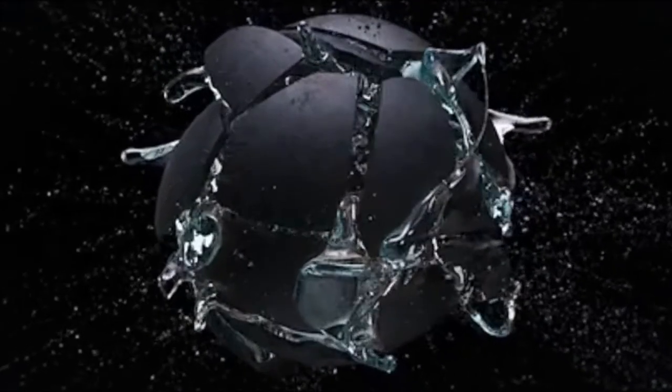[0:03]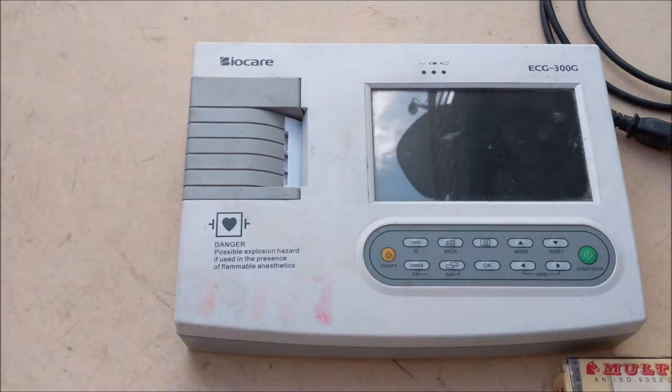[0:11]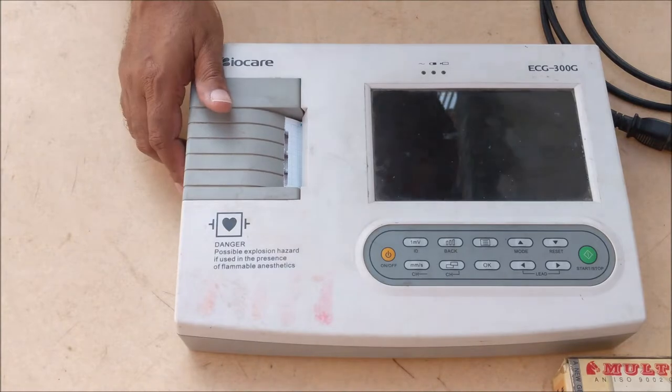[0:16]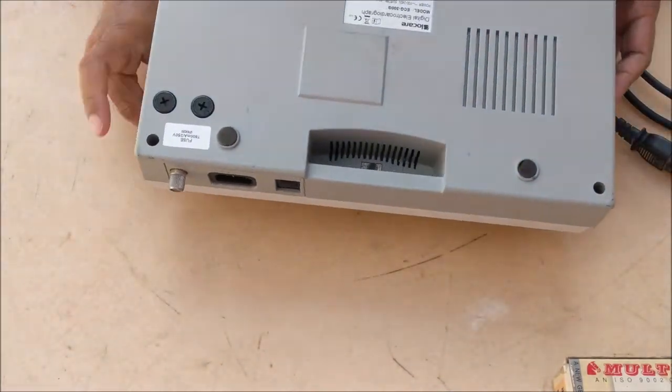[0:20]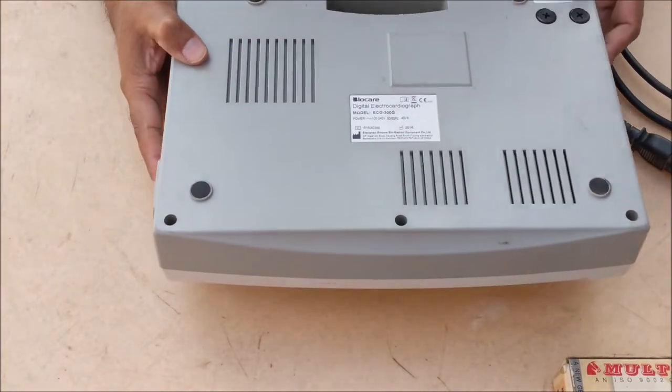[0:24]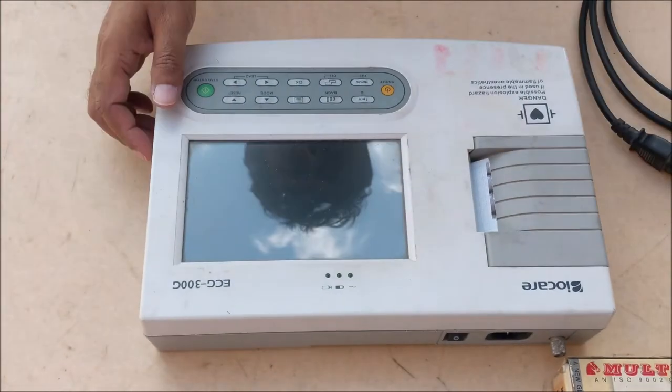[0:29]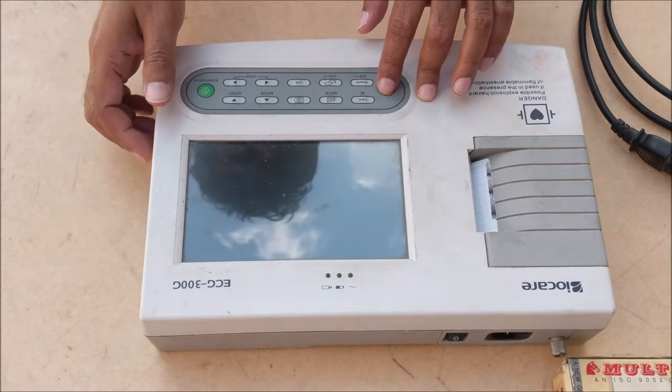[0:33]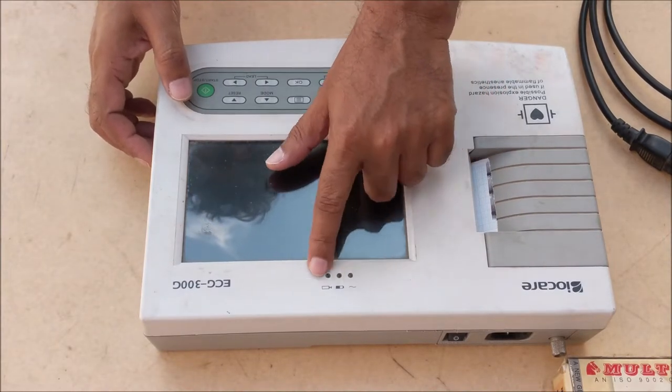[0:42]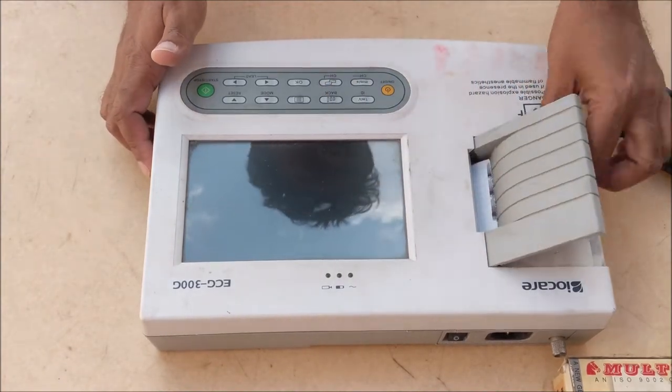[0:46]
Today we are going to repair this ECG machine of Biocare company, whose model number is 300G. You can see that when we turn on the machine, there is no display, and even the battery indicator is not flashing. So let's open the machine.
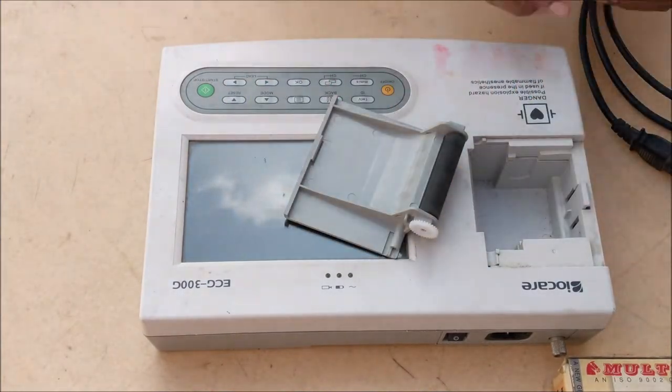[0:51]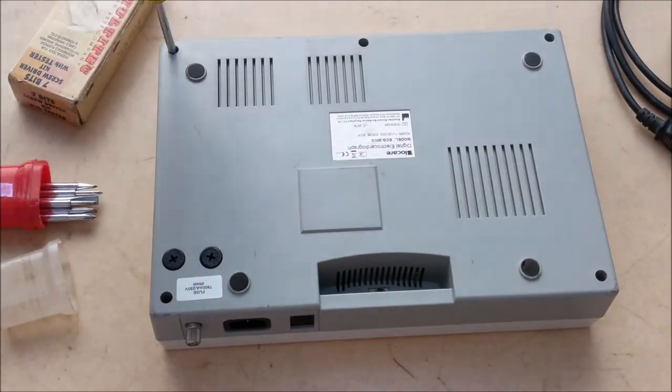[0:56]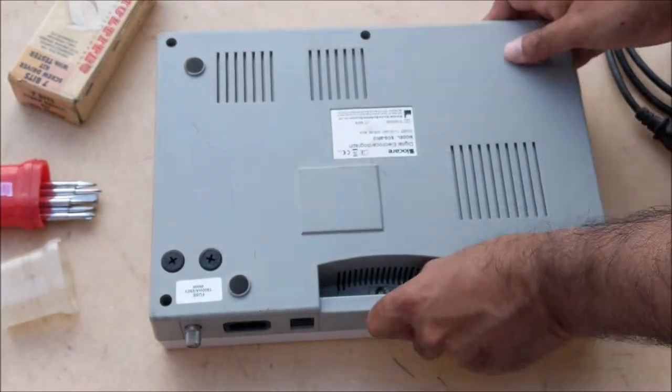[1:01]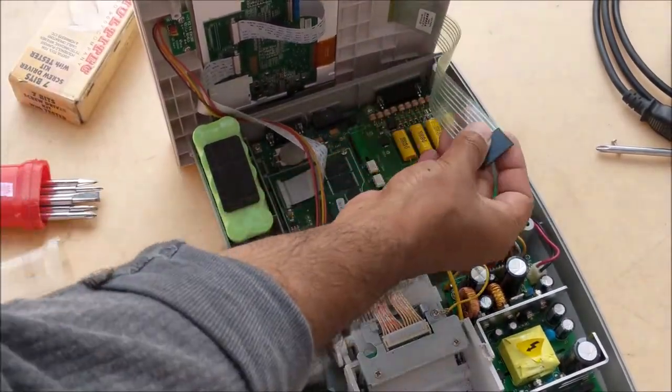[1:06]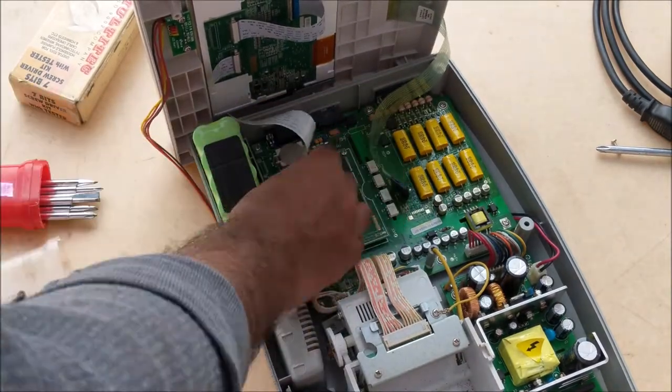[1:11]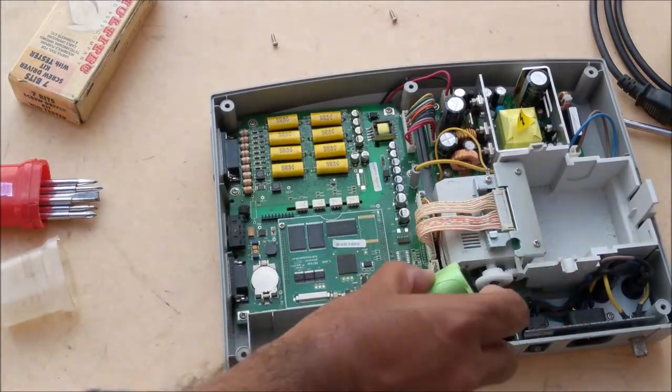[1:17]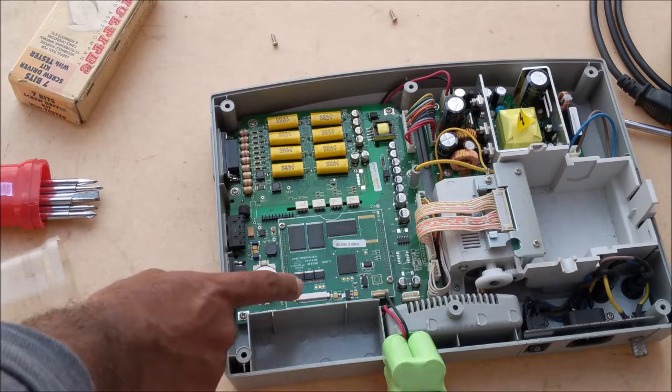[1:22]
First, remove the thermal paper and its plastic cover. Now unscrew all the 6 screws from the back of the machine. Open all 3 connectors to completely remove the upper cover. Since the battery wire is under the main circuit board, we have to remove the main board to remove the battery.
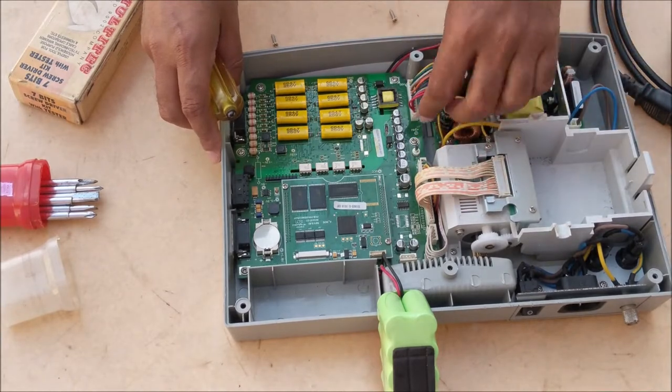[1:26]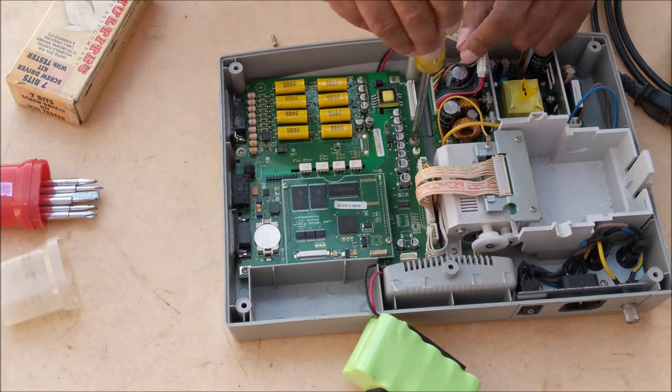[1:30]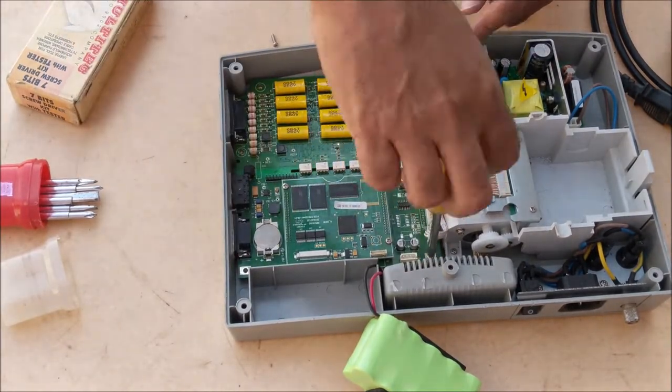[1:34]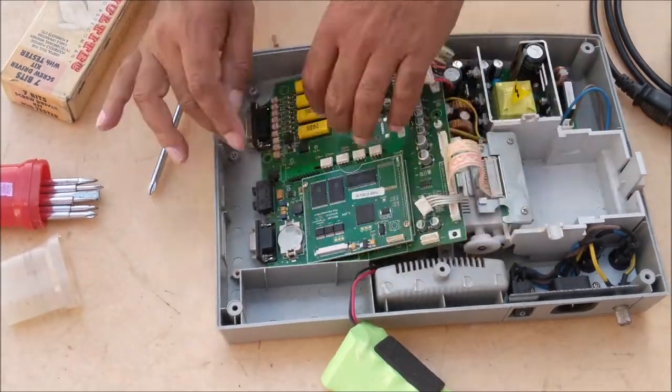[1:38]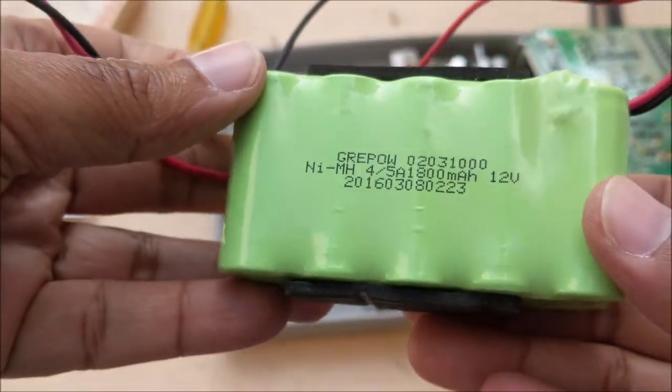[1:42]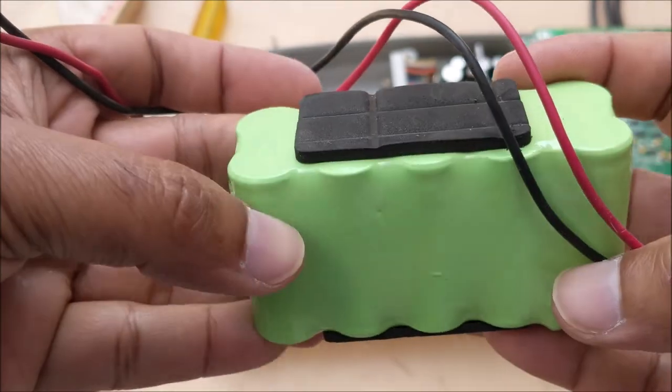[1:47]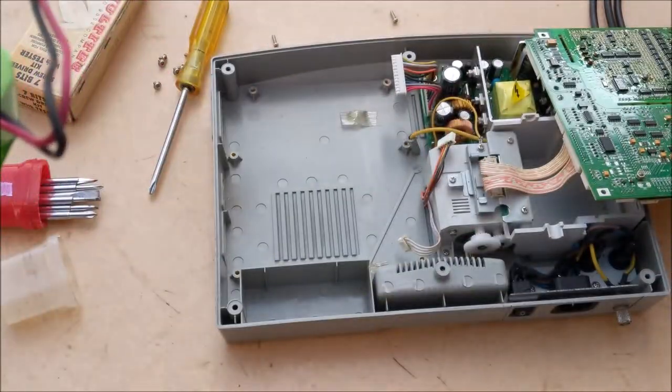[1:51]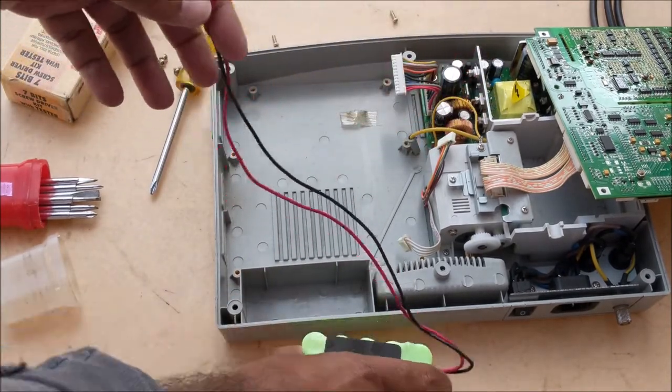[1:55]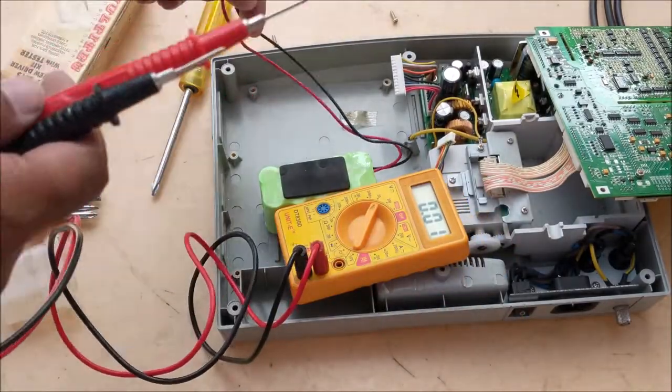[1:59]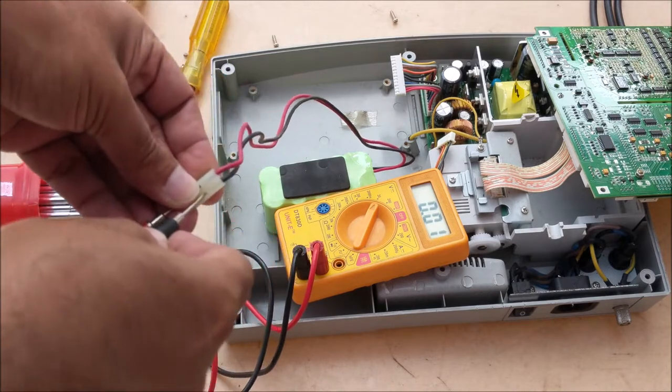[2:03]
This battery pack is made up of 10 nickel metal hydride batteries, all connected in series to deliver 12 volt 1800 milliampere hour. Let's check the battery with multimeter. You can see that the multimeter is not showing any reading, so the battery is completely dead.
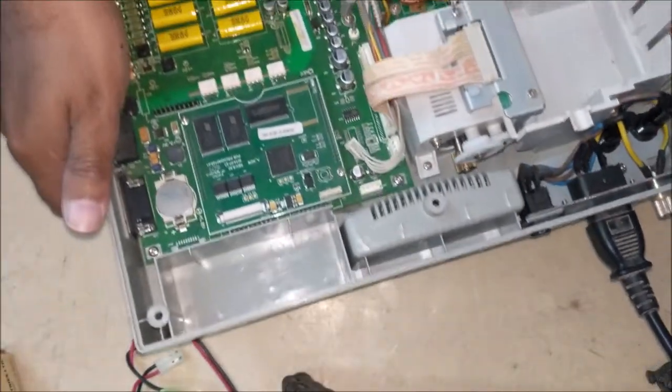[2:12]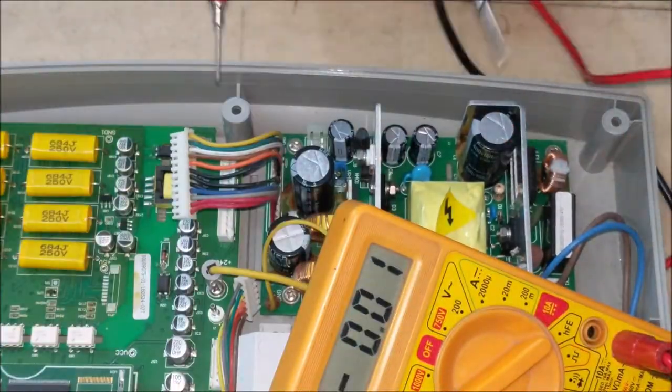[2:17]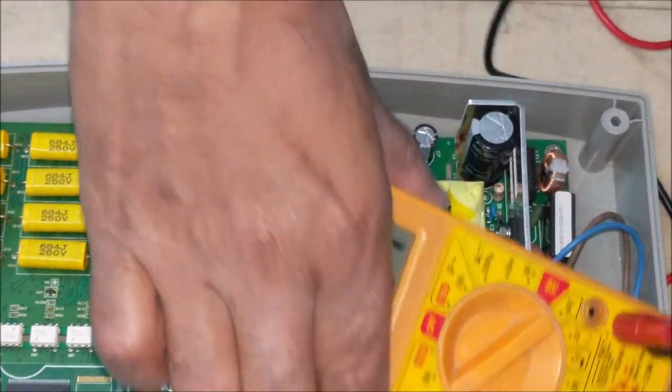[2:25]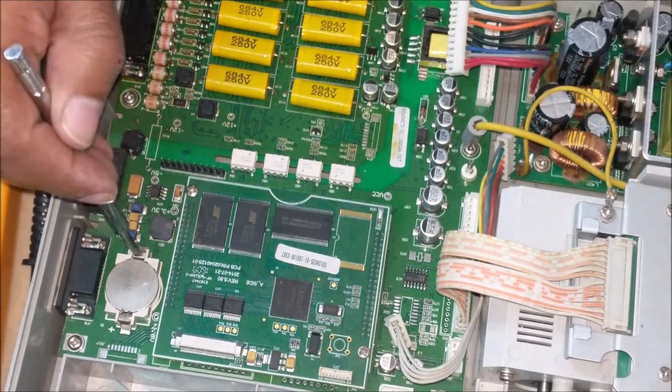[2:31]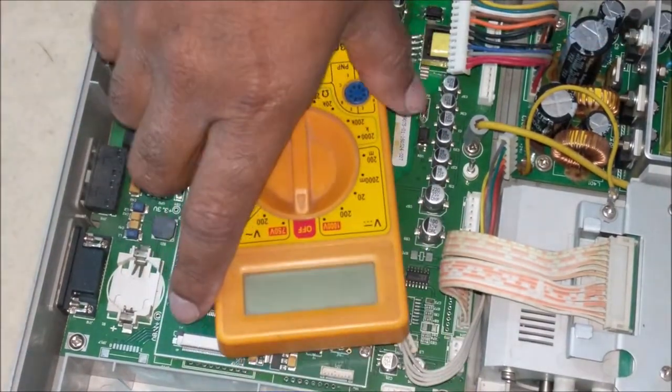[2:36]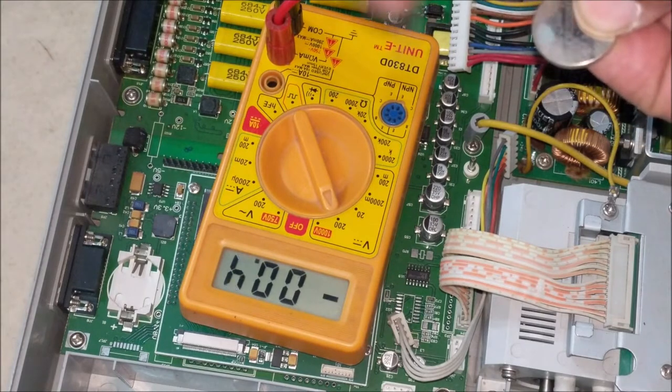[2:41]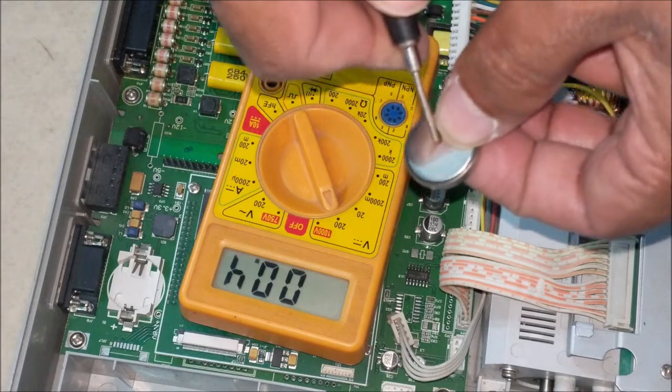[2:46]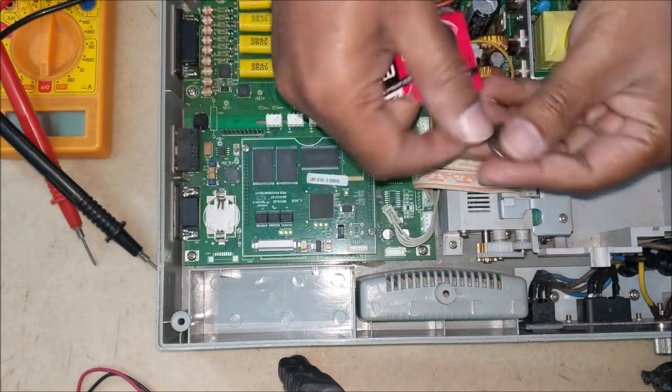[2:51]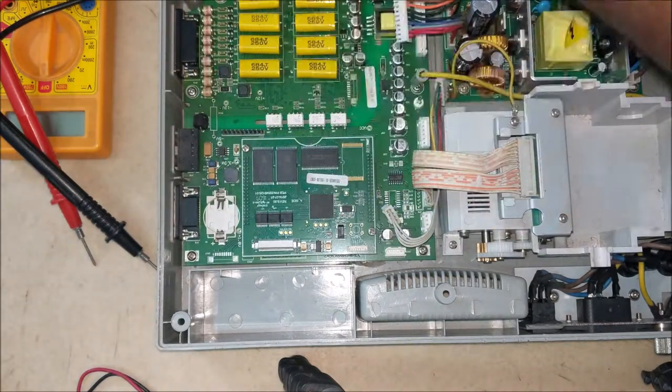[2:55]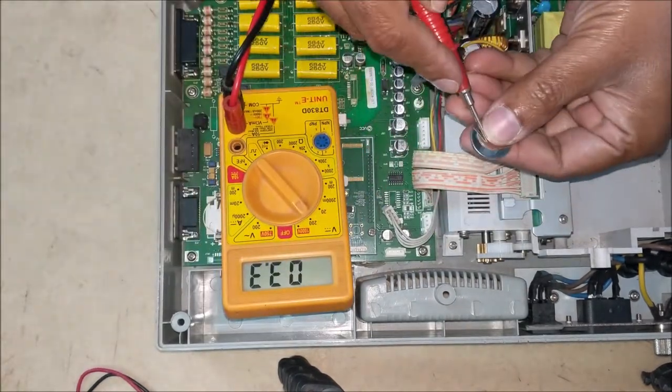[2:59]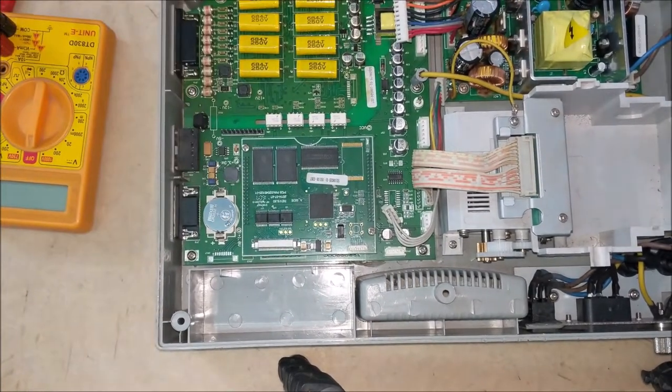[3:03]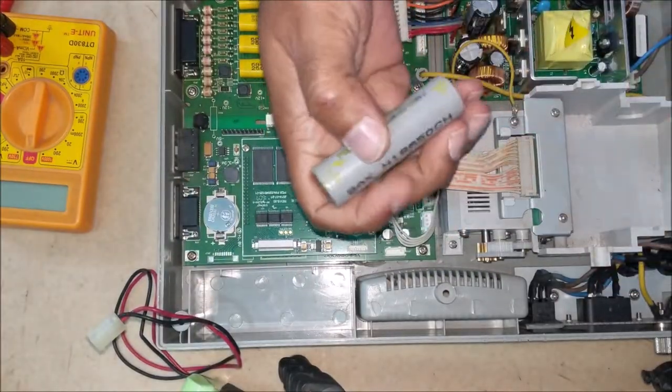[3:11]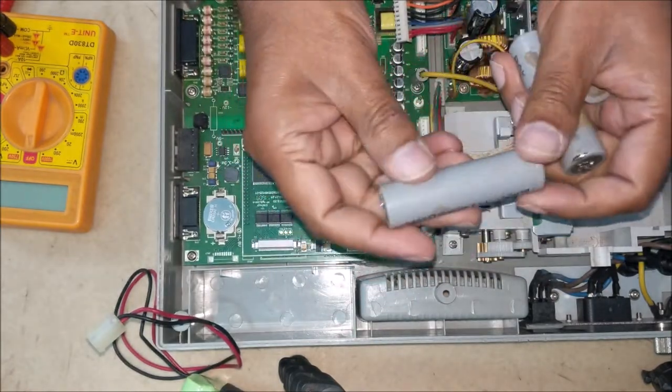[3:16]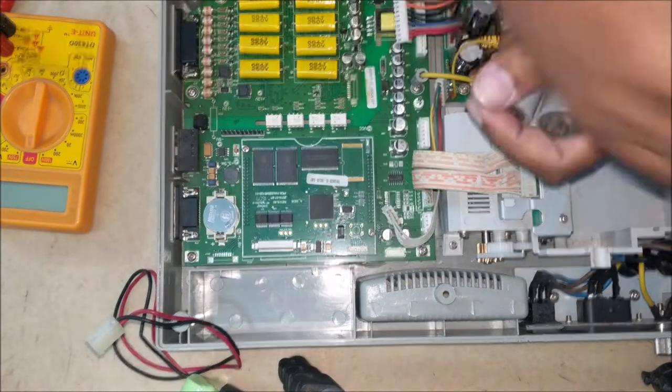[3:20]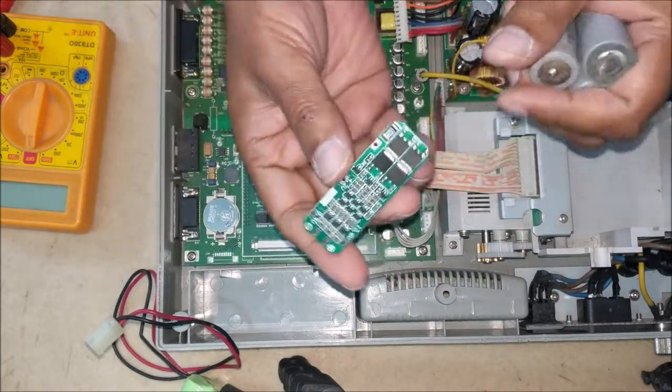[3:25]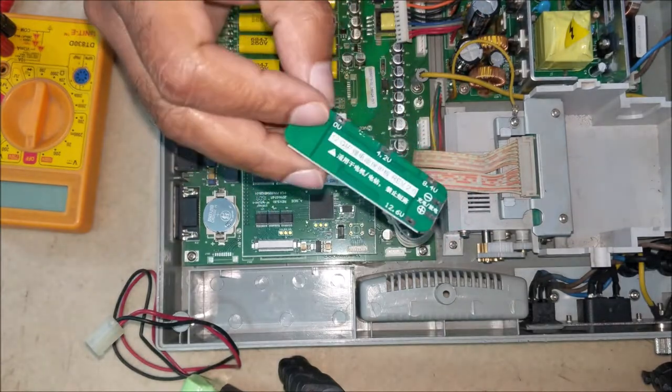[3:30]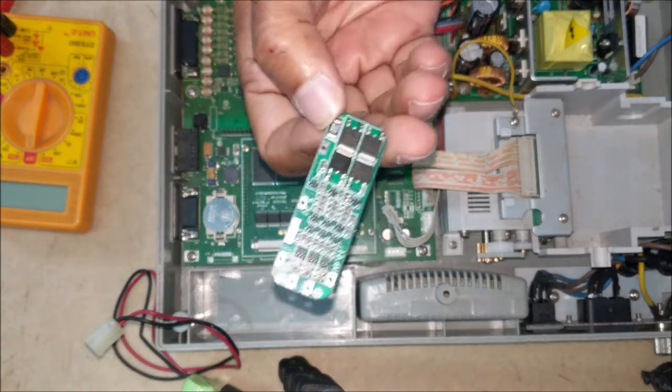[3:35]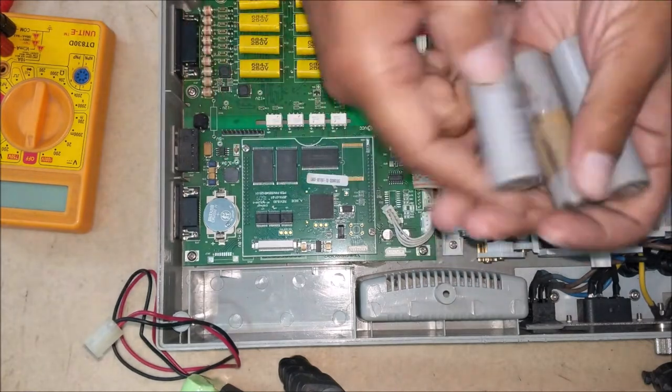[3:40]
Since this battery pack is very expensive, we are going to make this battery pack with 3 lithium ion batteries, each with a capacity of 3.7 volt and 2000 milliampere hour. Since we are going to use 3 lithium ion batteries in series, we also need a 3S BMS or battery management system. BMS protects the battery from overcharging, over discharging, and it also protects the battery from short circuit. It also balances the charge of all 3 batteries.
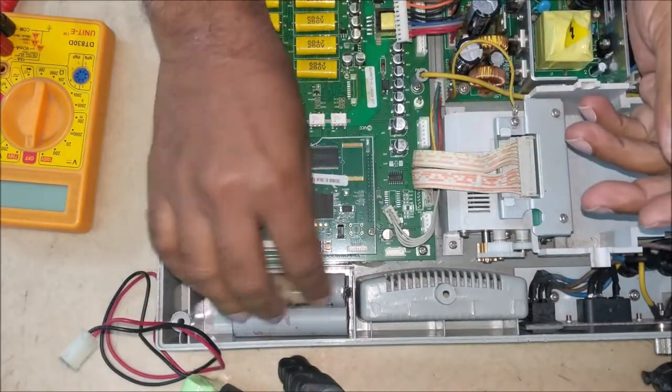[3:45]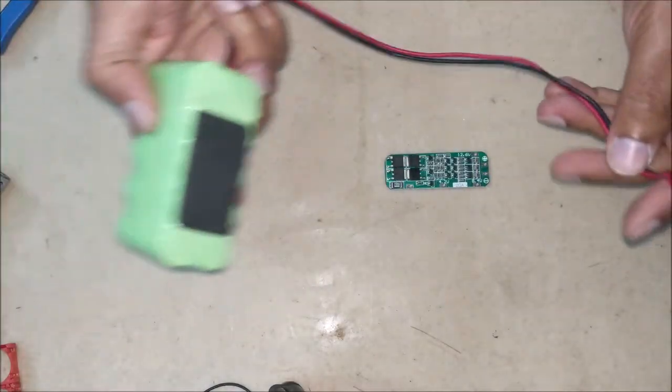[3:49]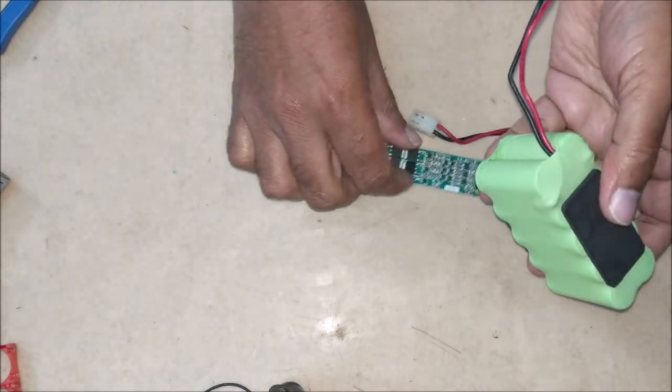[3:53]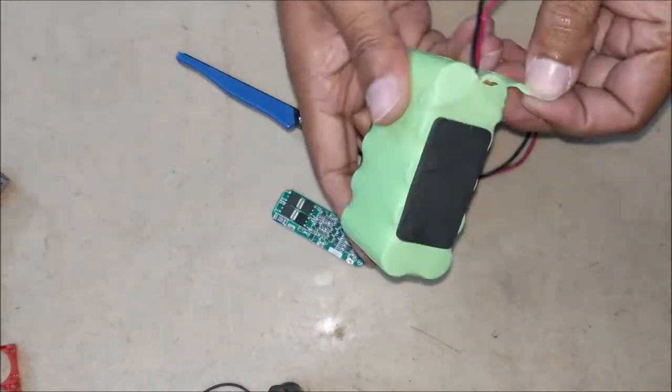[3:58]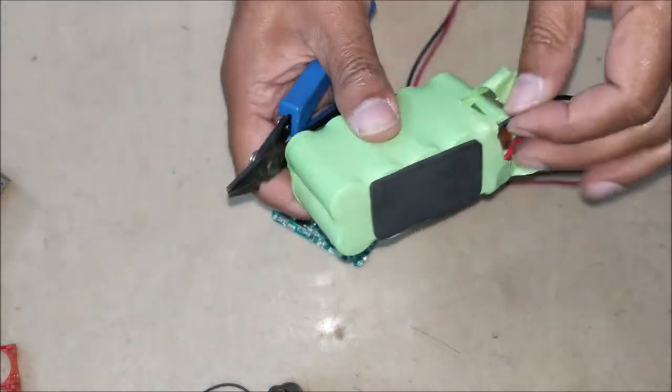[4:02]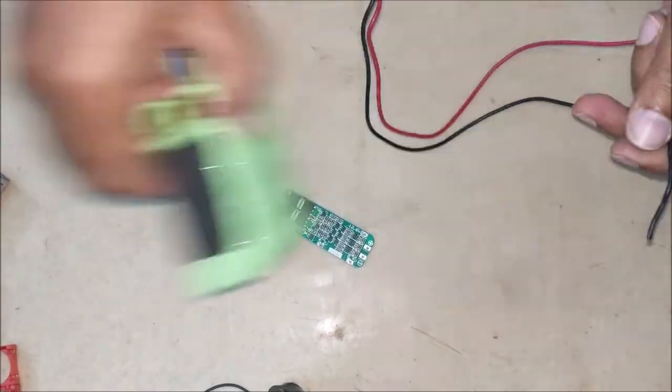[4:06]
These 3 batteries fit easily in this compartment. We are going to use this connector, so let's take it out from the old battery pack. Now connect all 3 batteries and connector to BMS as shown in the circuit.
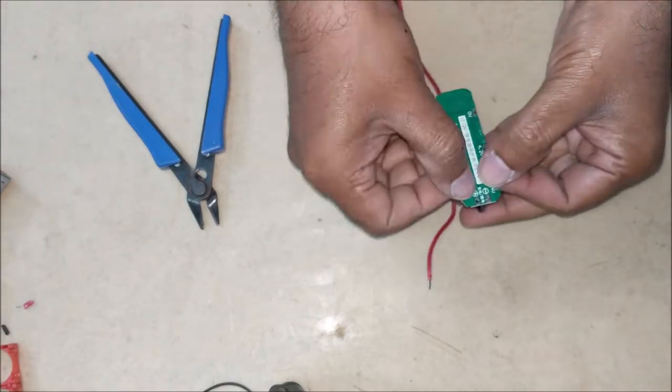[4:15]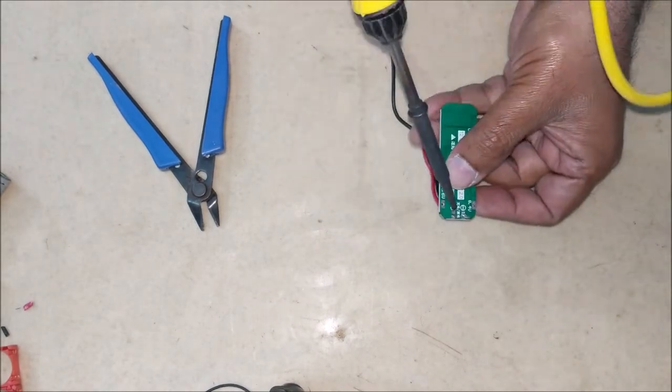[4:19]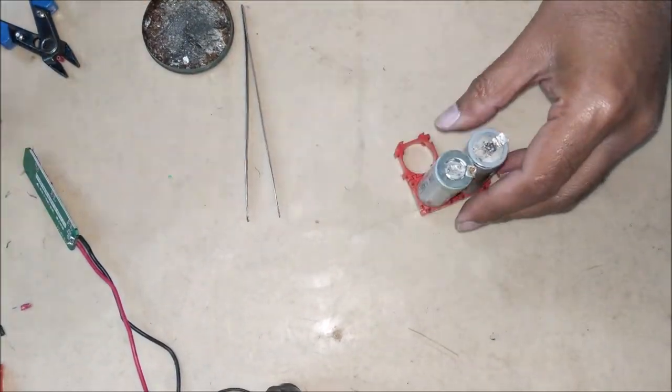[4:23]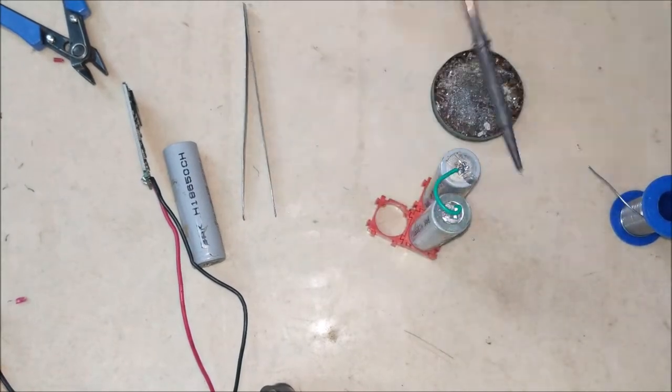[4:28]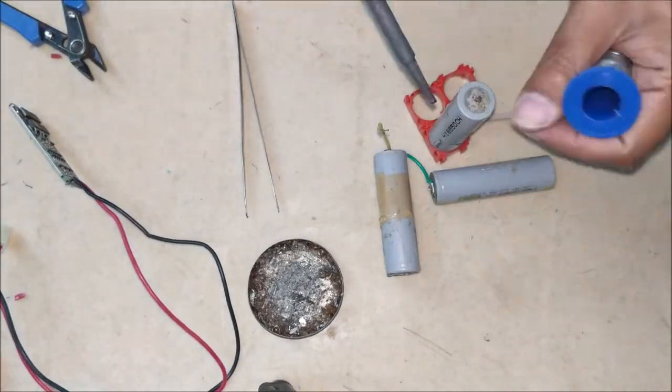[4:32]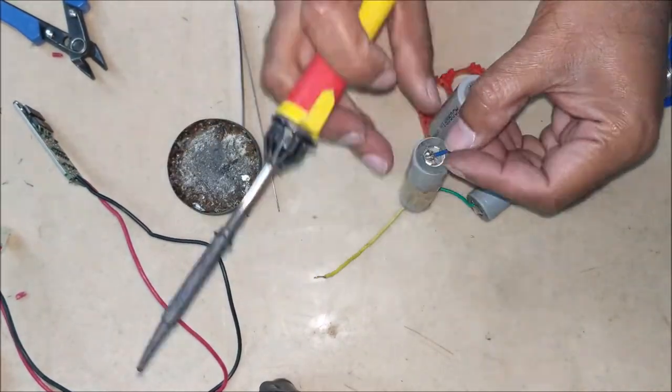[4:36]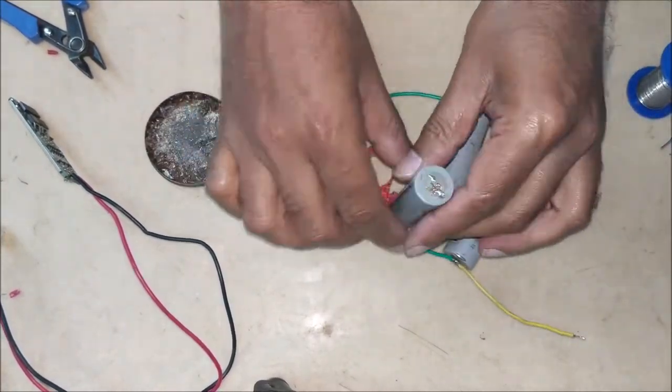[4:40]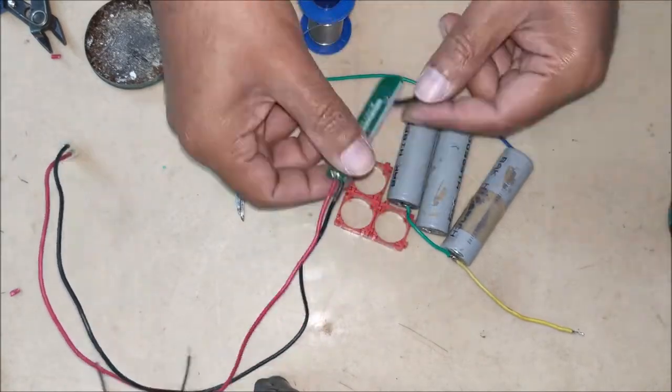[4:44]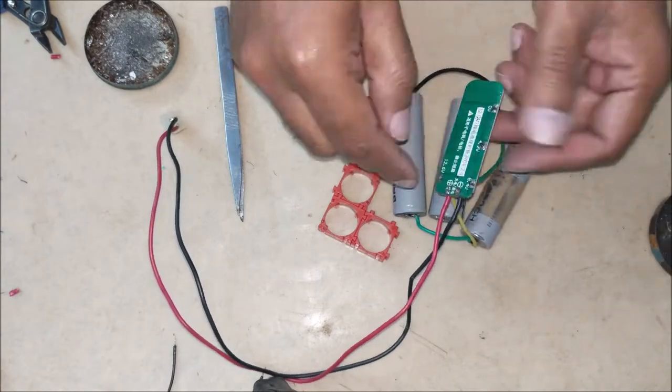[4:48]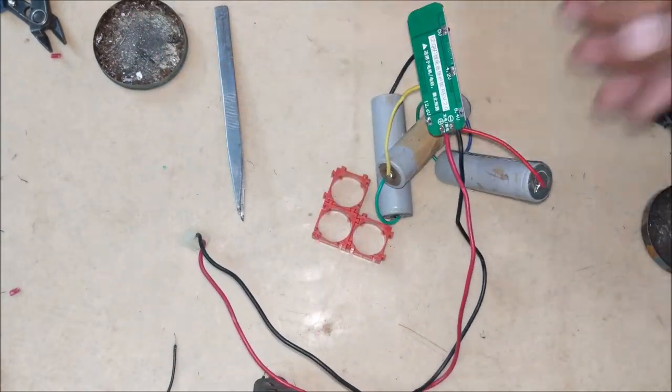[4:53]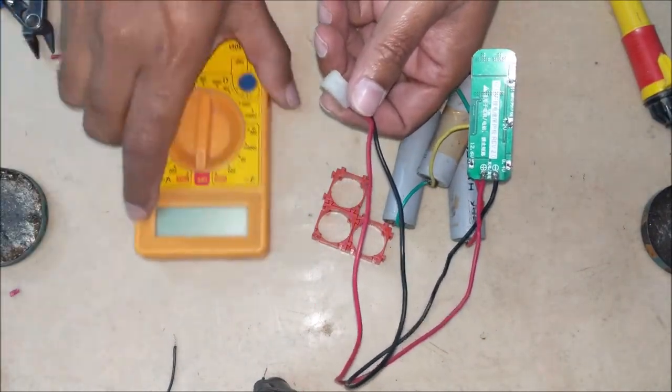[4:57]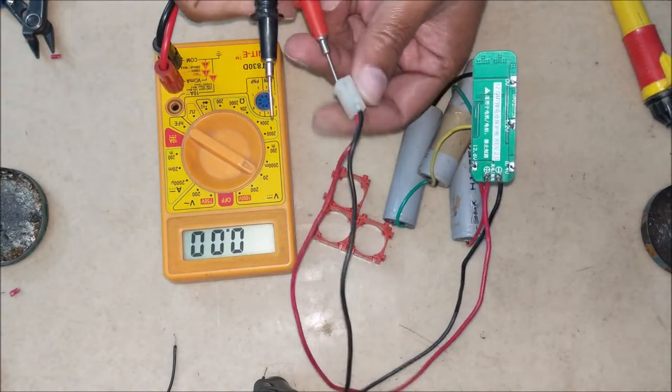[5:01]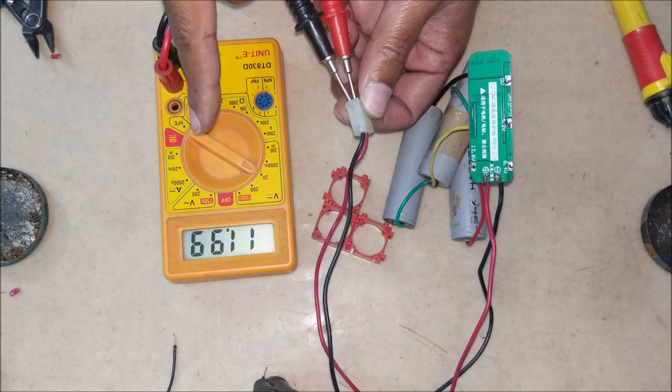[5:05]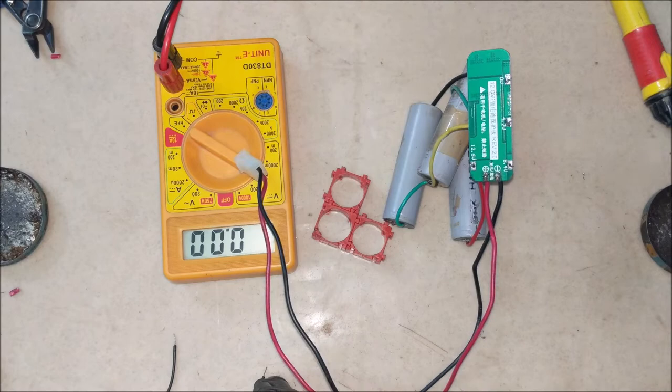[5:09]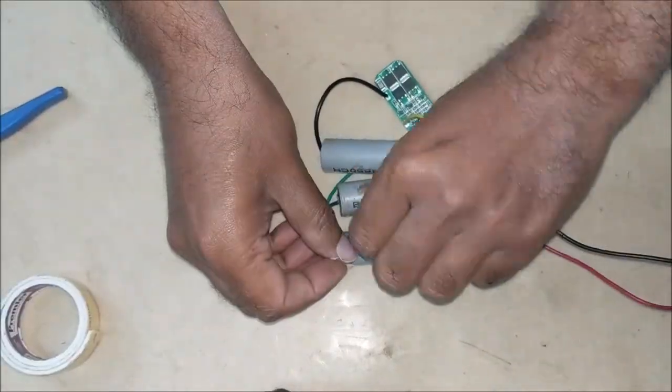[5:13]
Check the voltage of this battery pack. You can see it is showing 11.99 volt. That is, BMS is working. Let's put all the battery and circuit together with tape.
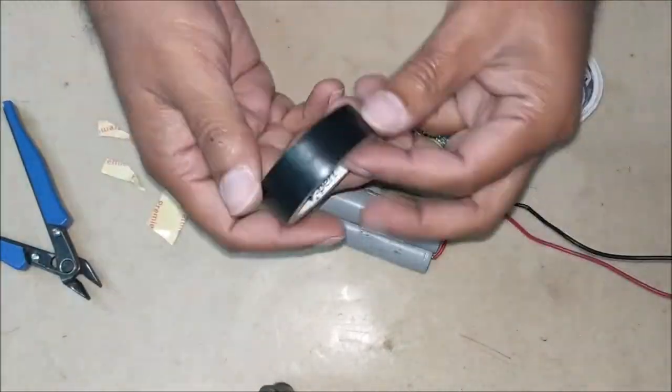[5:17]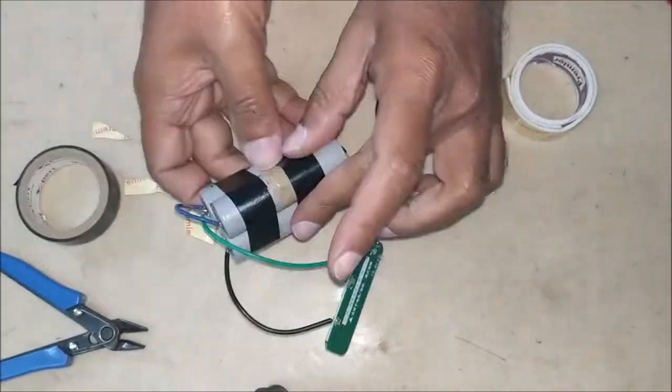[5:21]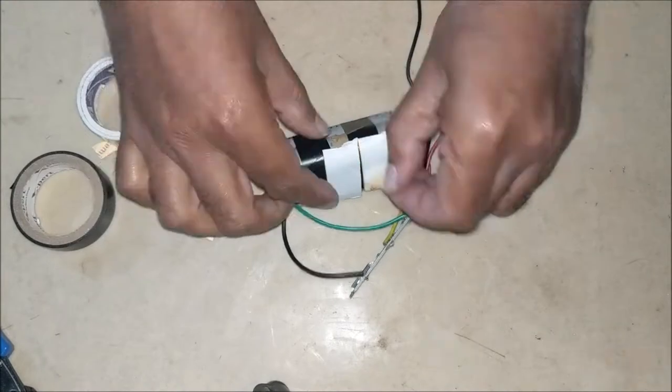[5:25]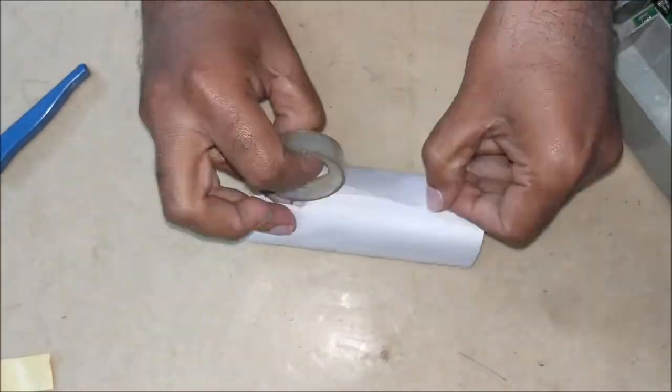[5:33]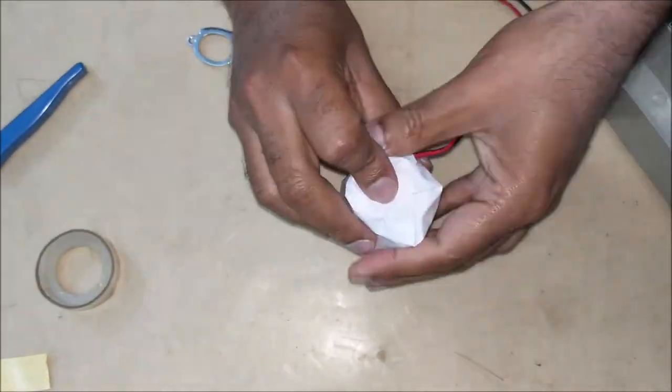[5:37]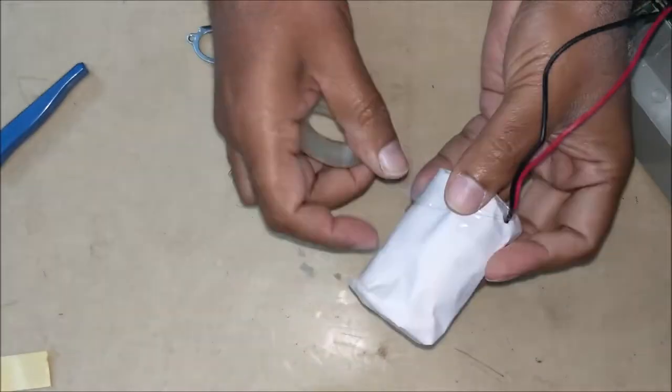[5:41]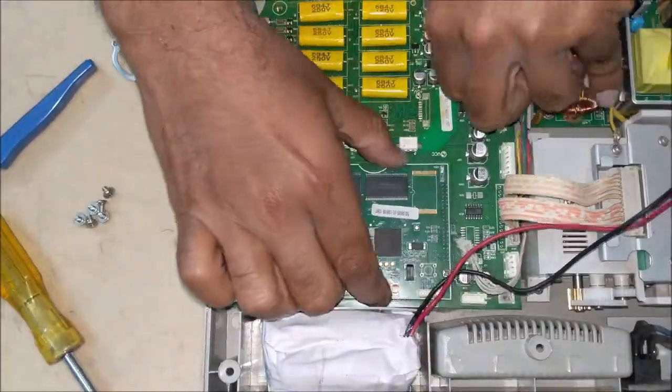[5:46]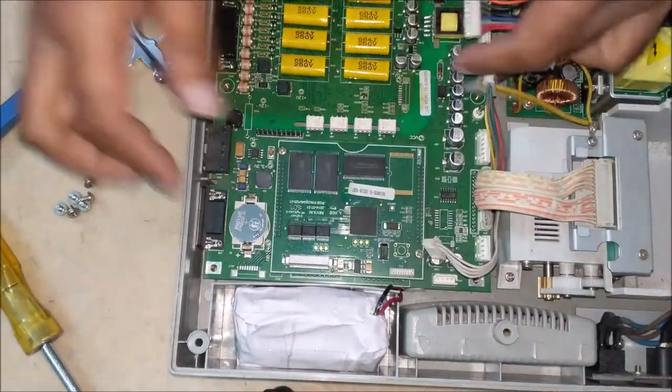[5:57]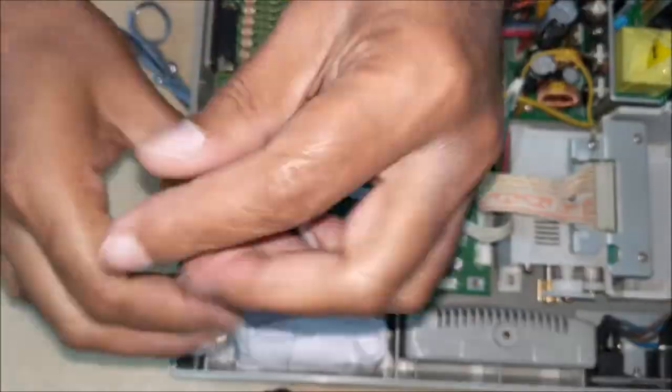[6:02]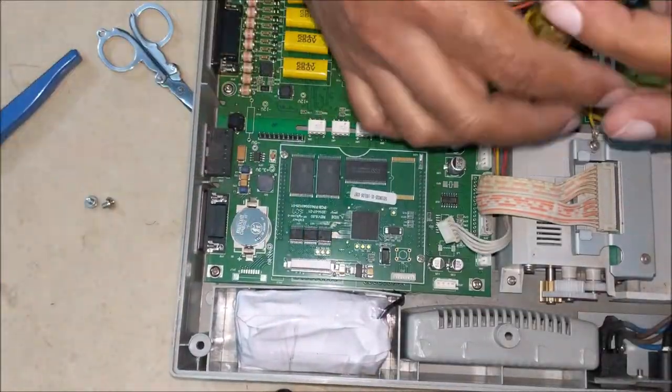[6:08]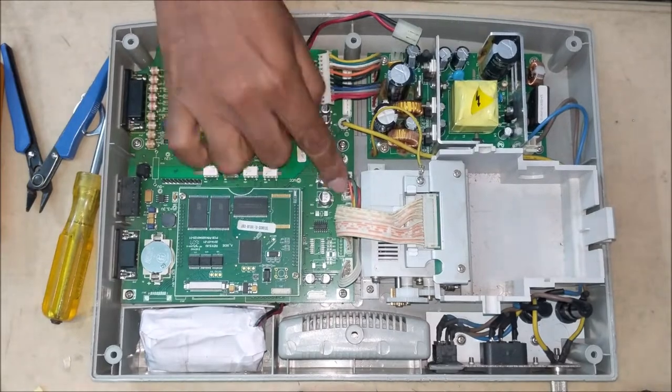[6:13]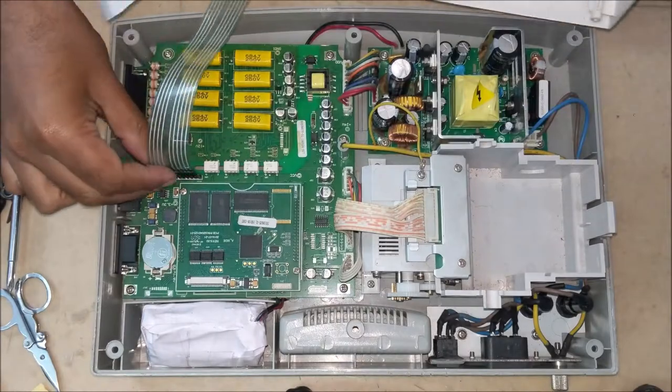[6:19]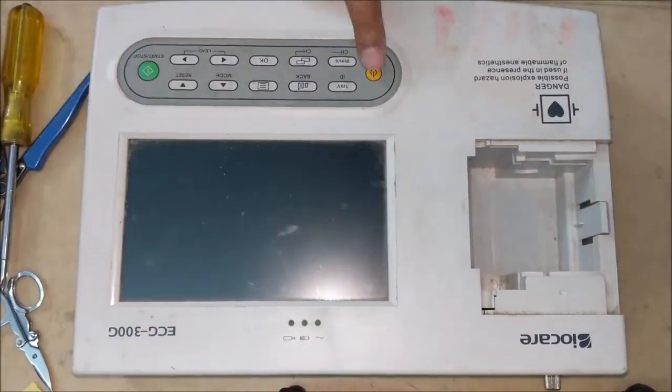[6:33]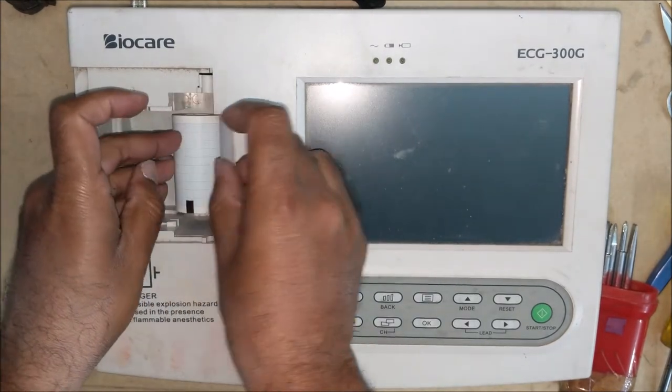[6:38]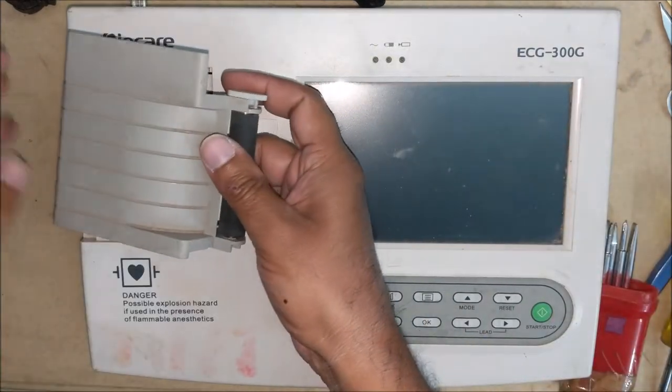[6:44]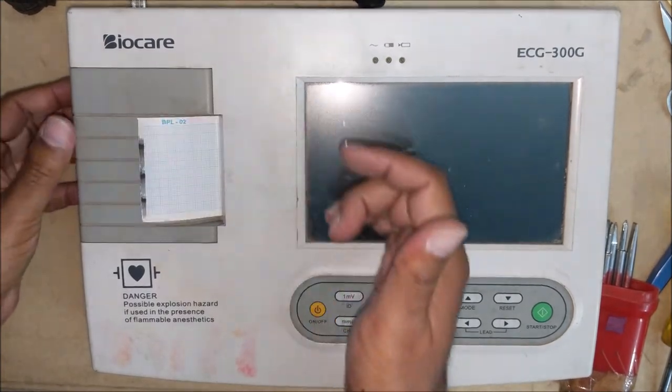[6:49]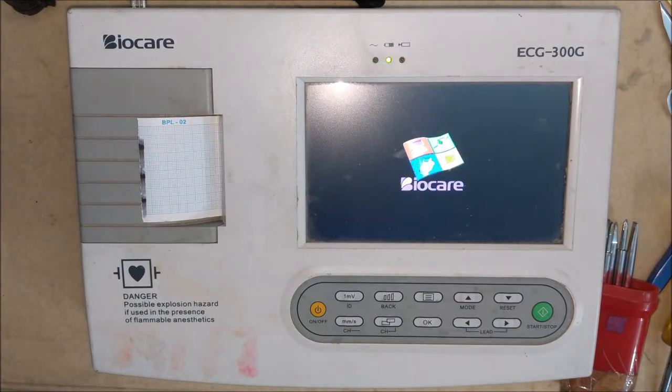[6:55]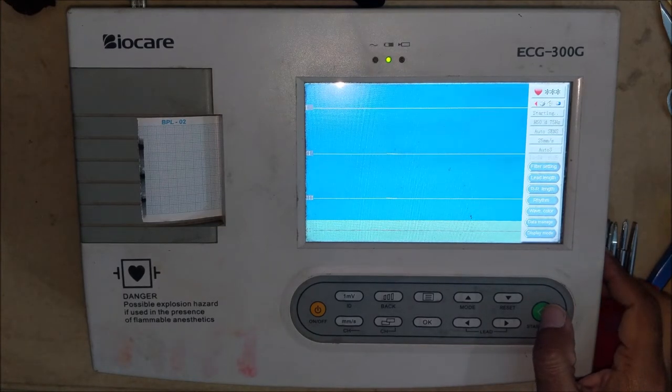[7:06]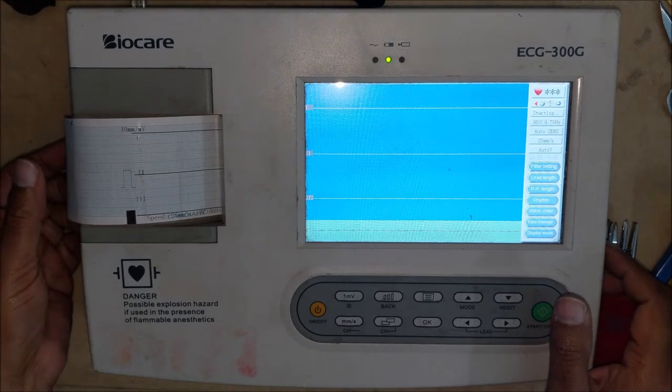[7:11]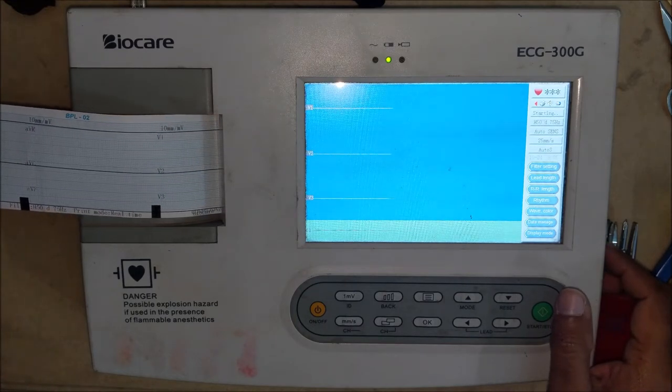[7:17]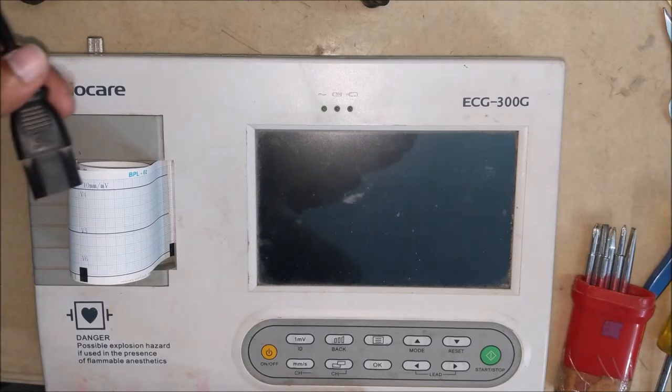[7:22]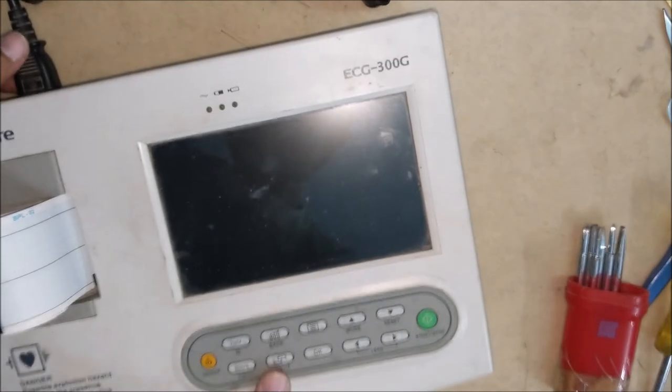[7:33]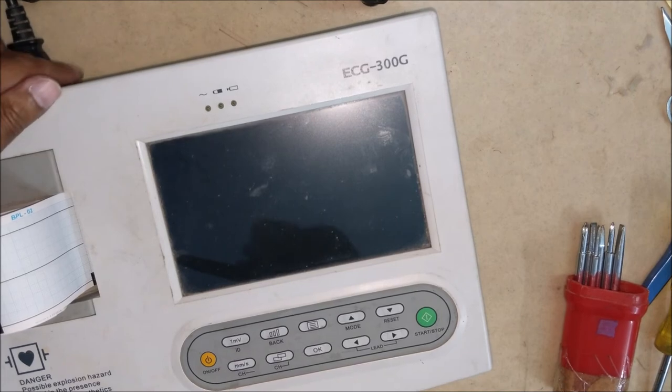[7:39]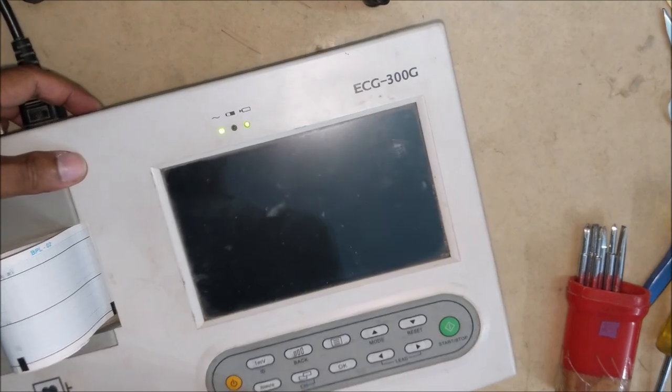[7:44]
Now connect the battery to the machine and check. You can see that the machine is working and the battery is also getting charged.